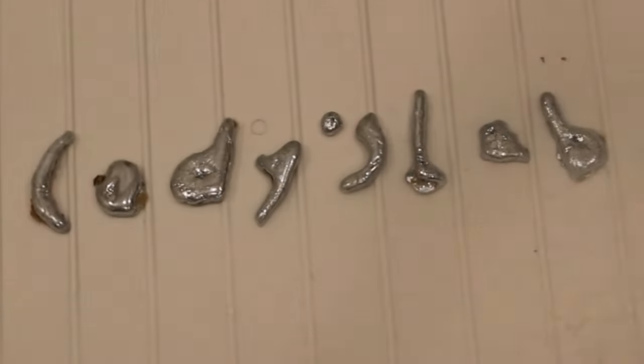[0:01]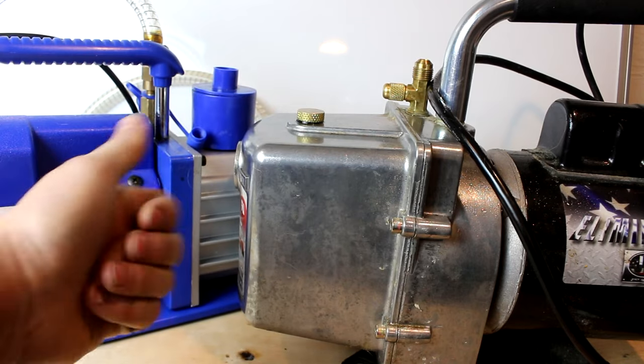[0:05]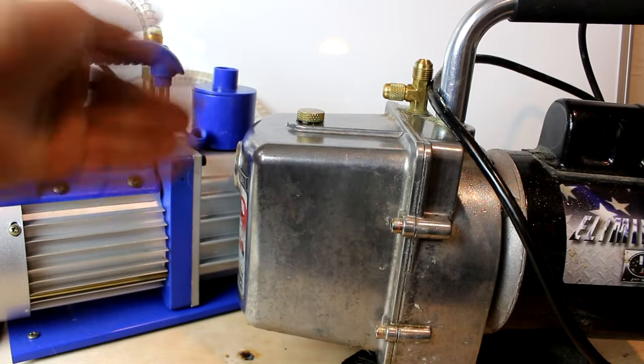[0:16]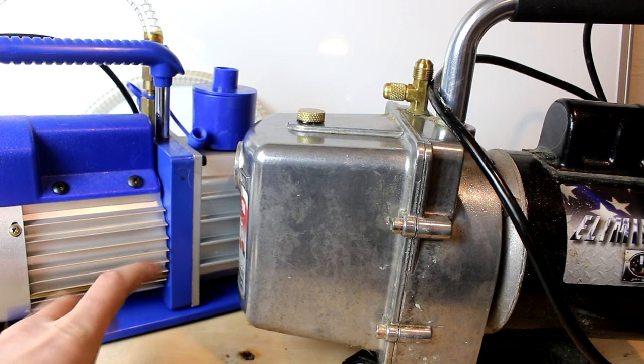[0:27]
So here are the vacuum pumps that I've been using in several of my recent videos. And with these, I'm able to exhaust the atmospheric pressure inside of a chamber down to roughly 1/1000th of what it is normally. So that is 99.9% of the way to a perfect vacuum, which is, for most purposes, totally adequate. Unfortunately, there are some experiments I have planned that require me to bring it down to roughly 1/1000000th of atmospheric pressure, so I need to add a few more nines to that value.
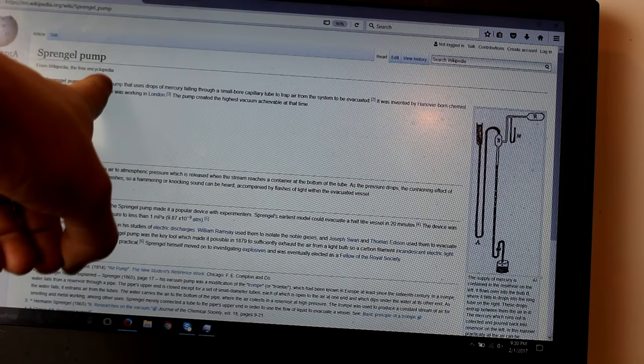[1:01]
In order to achieve those levels of vacuum, I was considering purchasing either a turbomolecular pump or a diffusion pump, and I may still yet. But while I was researching it, I decided to look up what they used back in the old days before those types of pumps even existed. You know, what did Thomas Edison use to evacuate his light bulbs, and what did Crookes use to evacuate his Crookes tubes? The answer to that is the Sprengel pump.
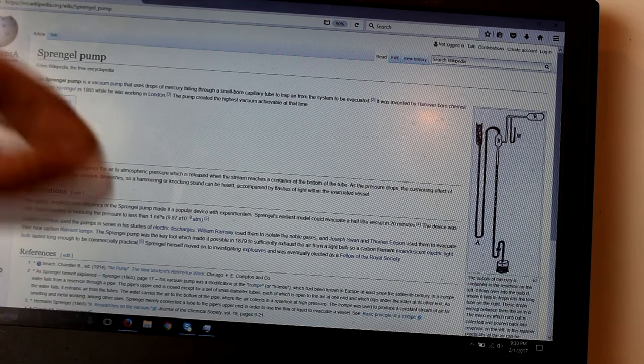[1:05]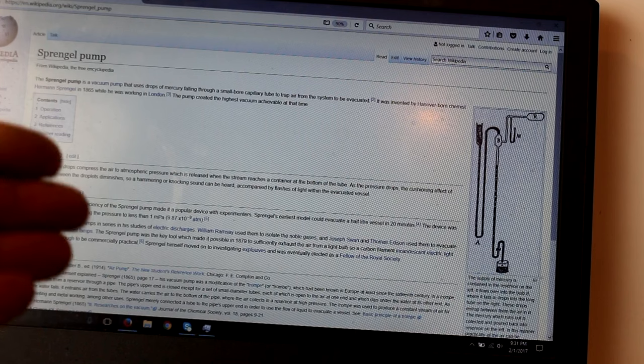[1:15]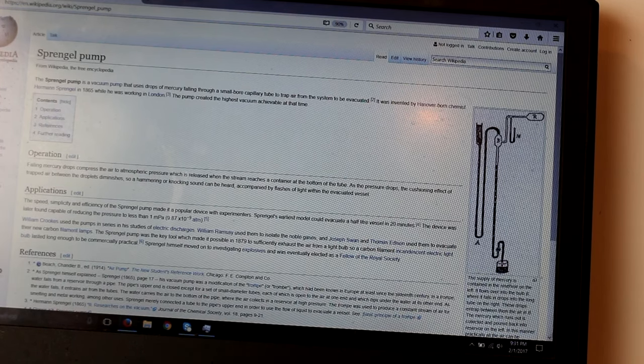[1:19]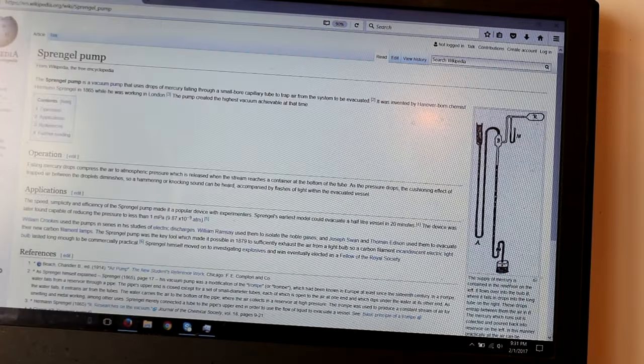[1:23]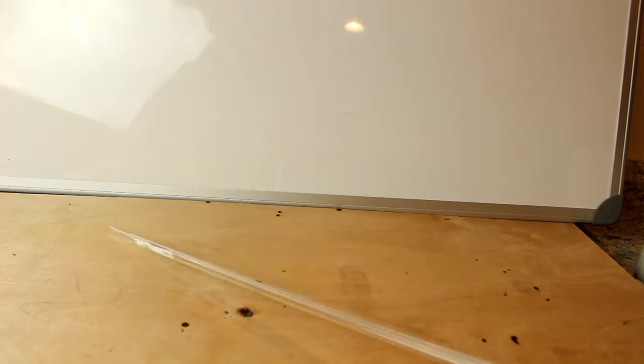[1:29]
I probably said that completely wrong, but the idea is that you use droplets of falling mercury to evacuate a chamber. And theoretically, it can achieve vacuum levels down to the vapor pressure of mercury, which actually is quite low. And that would be more than adequate for projects that I have planned. Also, I've got loads of mercury. In fact, the more I look into this pump, the more I want to build it. And so you know what? I got me some glass. Let's see if I can actually build it.
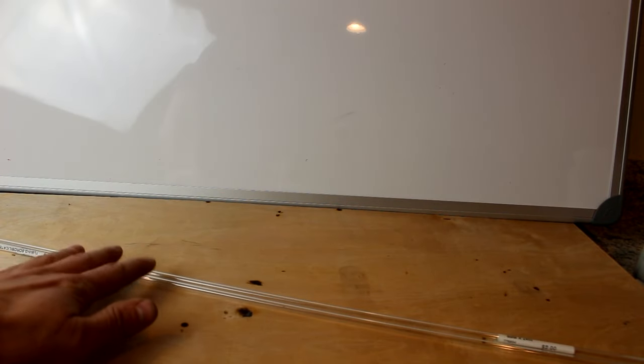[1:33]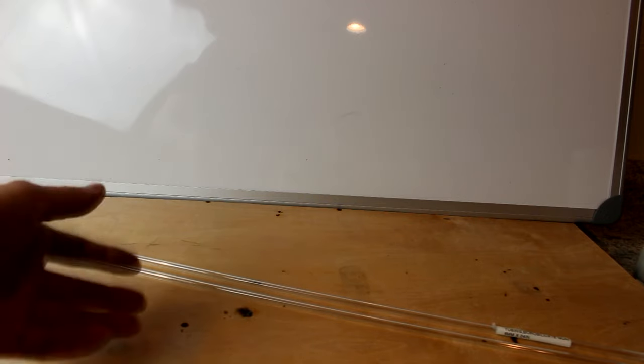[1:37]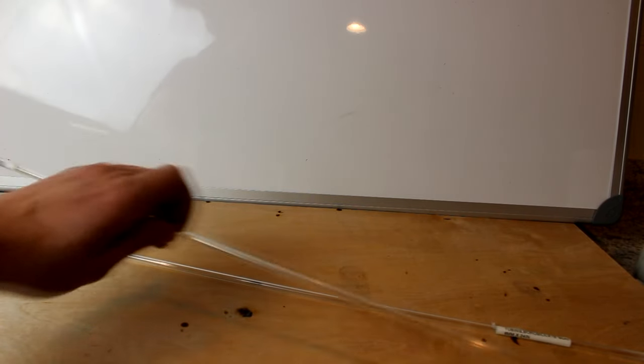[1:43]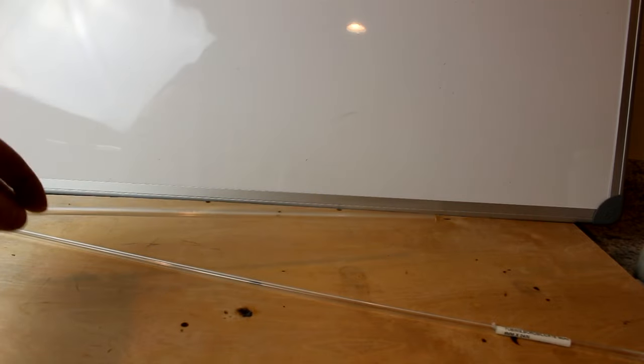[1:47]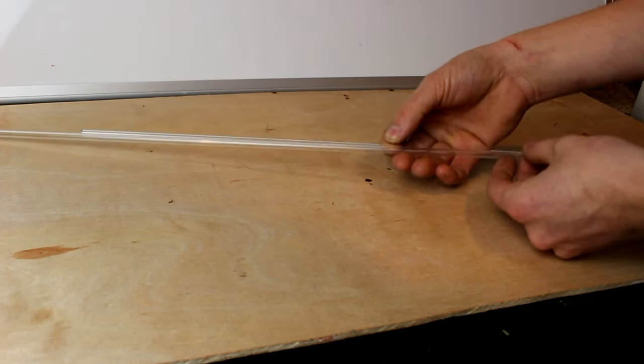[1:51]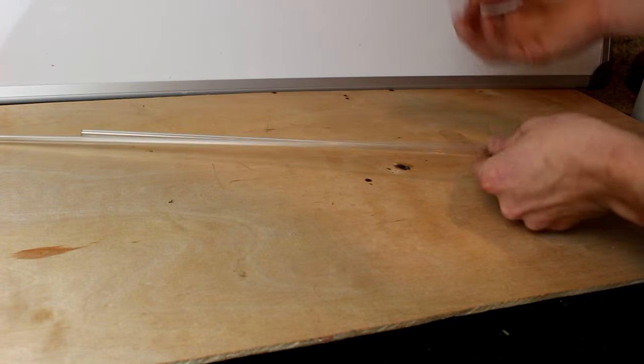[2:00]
Now, I don't think one of these pumps has actually been used since color photography came about, and so I don't really have any good photographs of it, so I'm going to have to make guesses on most of the dimensions. But I think I can figure it out, and it's more fun this way. Now, the first thing I got to do with this is cut some down and make a T. You know, I've got to have somewhere for the mercury to go in, somewhere for it to come out, and somewhere for me to hook up to a vacuum chamber.
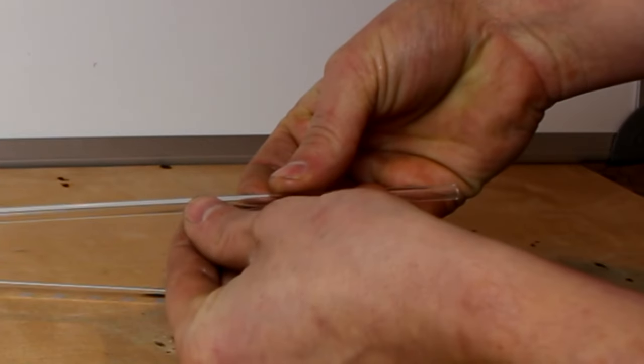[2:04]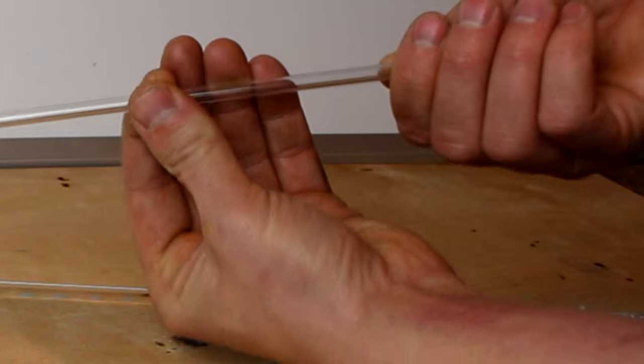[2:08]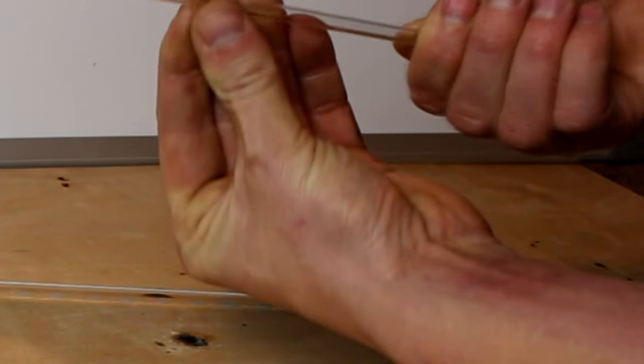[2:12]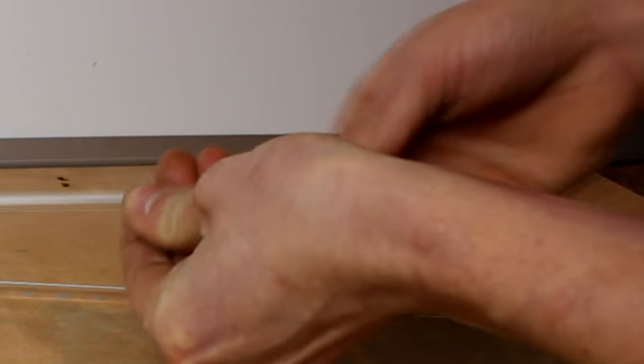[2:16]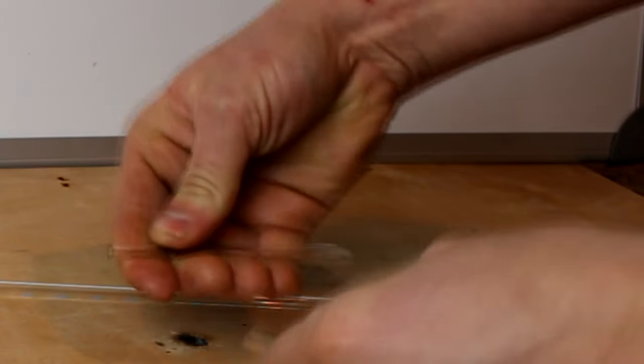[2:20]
So I got a little diamond here I'm going to use to cut the tubing. Let's say about yay long for the first T, maybe a little longer. Let's just run this diamond around here. Ow. It's actually sharp. Let's run the diamond around to score it. Now I should just be able to snap that off. Excellent. So now for the fun part.
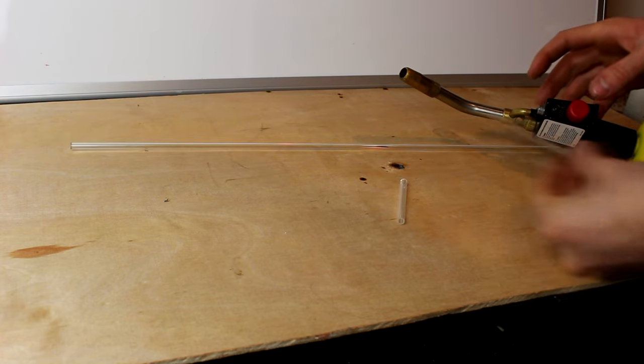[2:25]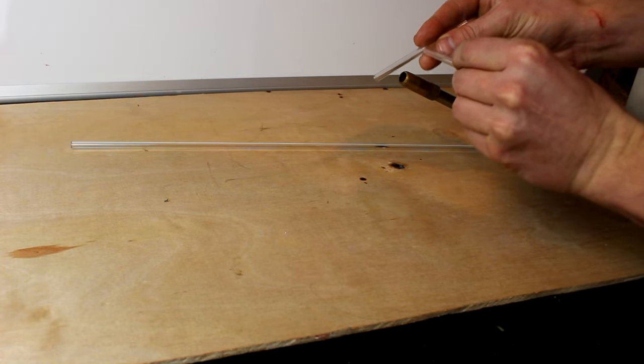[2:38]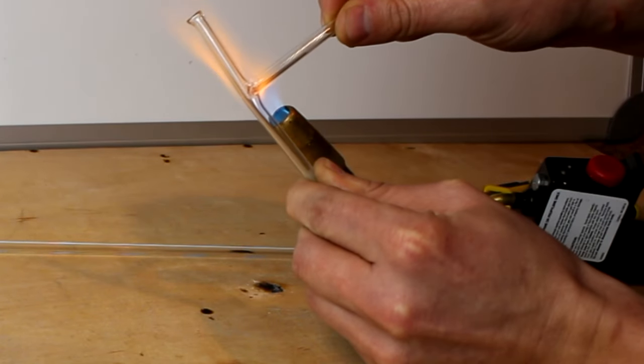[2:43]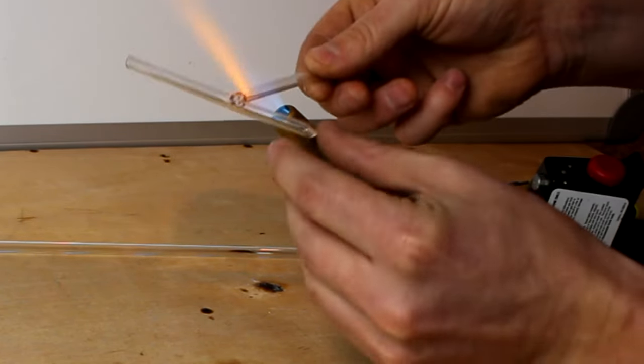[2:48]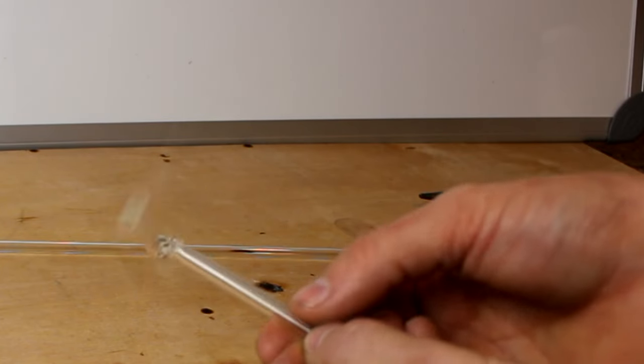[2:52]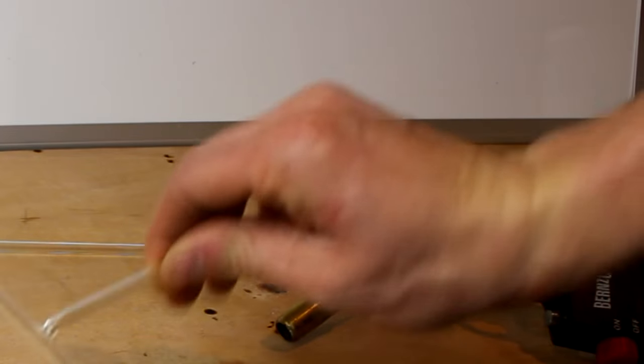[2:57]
I don't have any specialized glass blowing equipment. In fact, all I've got is a blowtorch. I probably should buy something at some point, but I think it'll work still. So let's seal one end, let's blow a bubble, and then attach that to there. Sounds simple enough. Okay, so there's the T. It could be better, but as long as it seals, it should work.
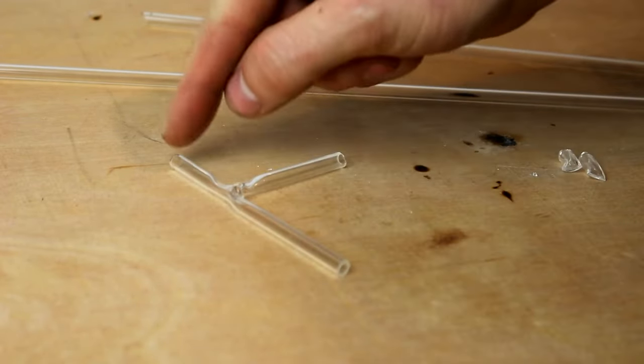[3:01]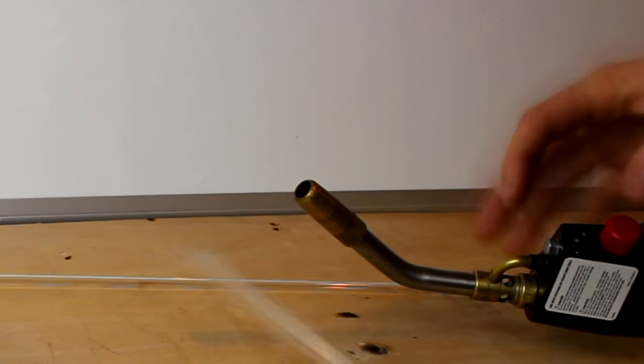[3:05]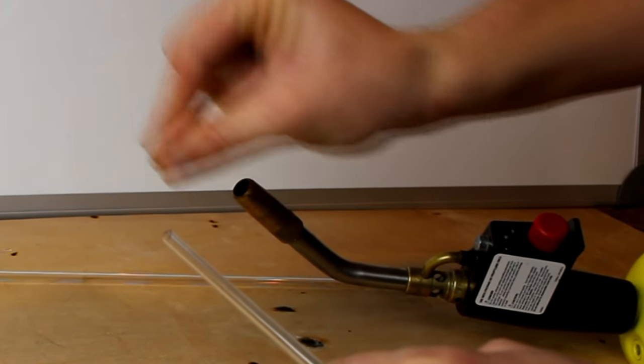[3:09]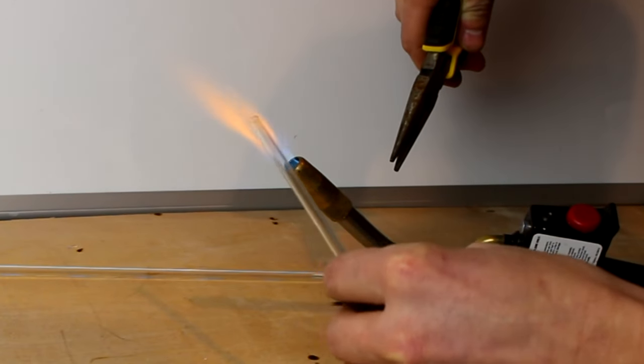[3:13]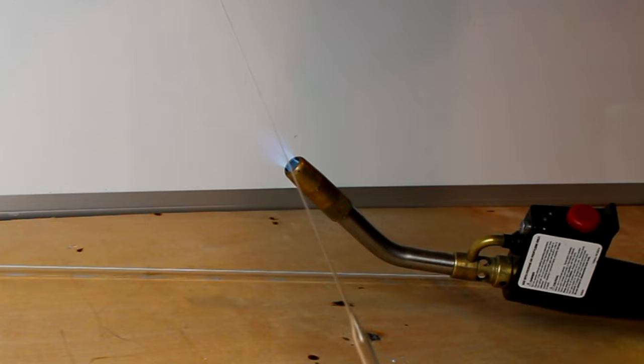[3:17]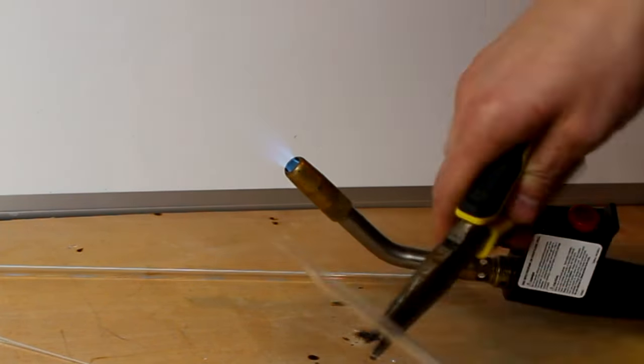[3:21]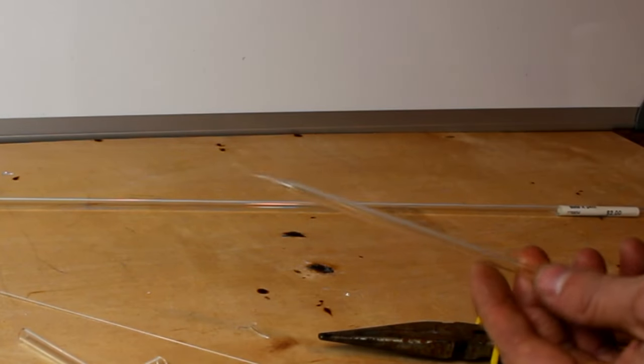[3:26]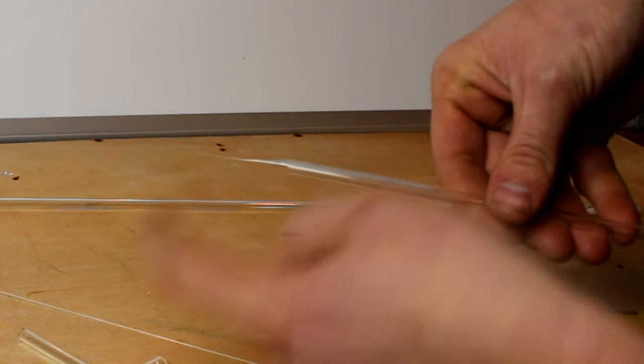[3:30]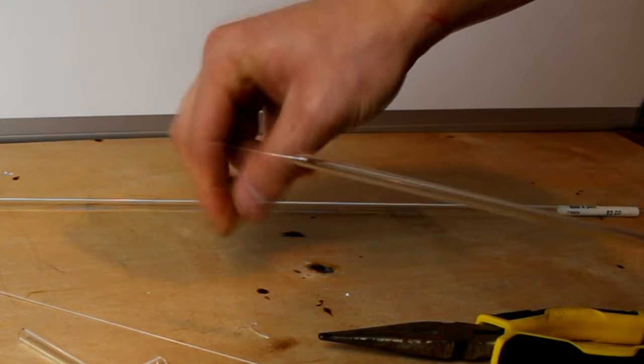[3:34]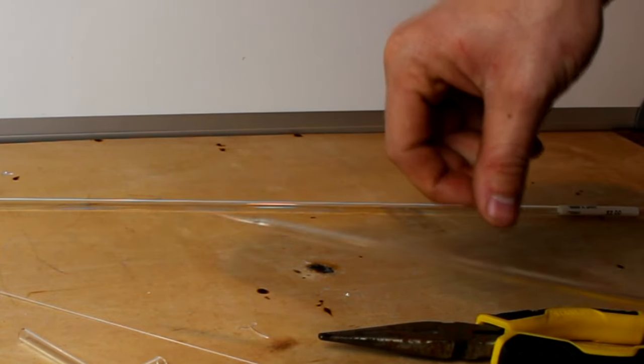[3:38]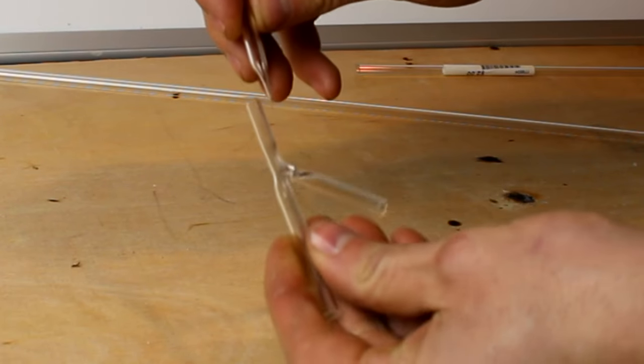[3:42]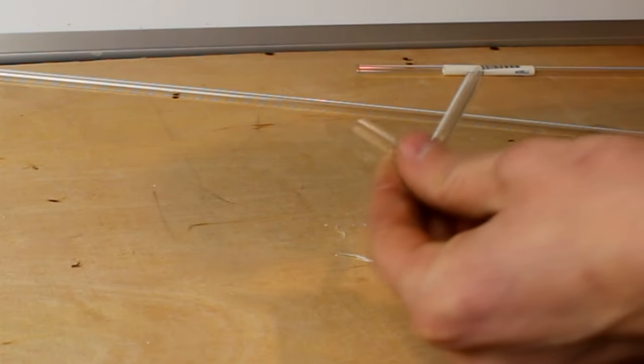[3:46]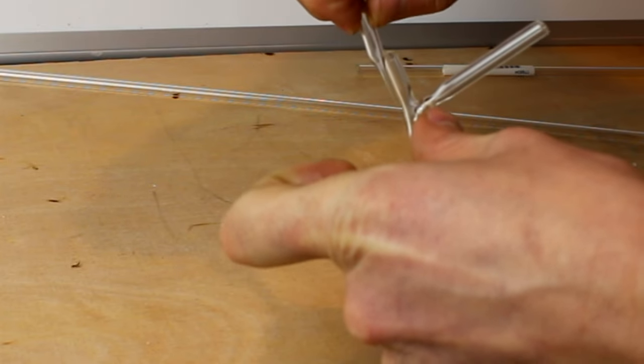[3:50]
Now let's make the mercury dropper to go inside of this. So to do that, I'm going to stretch the tube really thin. That way the mercury can only come through a very tiny hole. Okay, so the glass is now stretched to the point where you can probably not even see it on the camera. I'm gonna break it right about there. Now there should be a very tiny opening for the mercury to come through. That should give me some very small droplets. Now I just gotta stick this into there. I think the best way to do that is to flare this out and then heat it up again and seal those together.
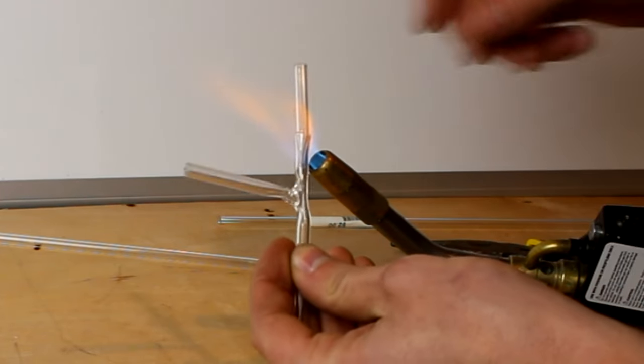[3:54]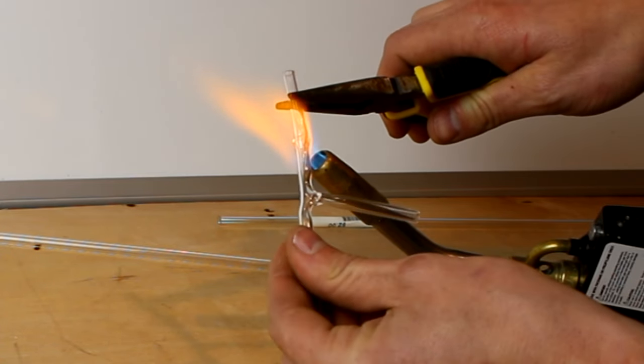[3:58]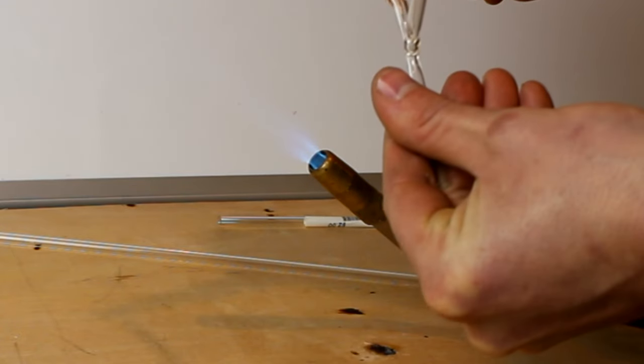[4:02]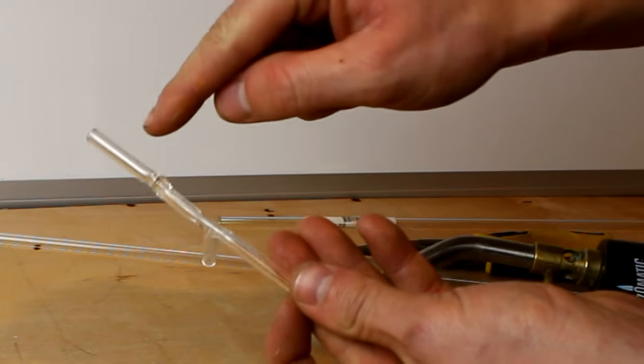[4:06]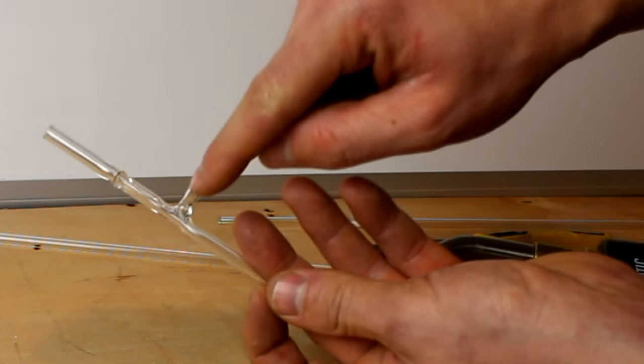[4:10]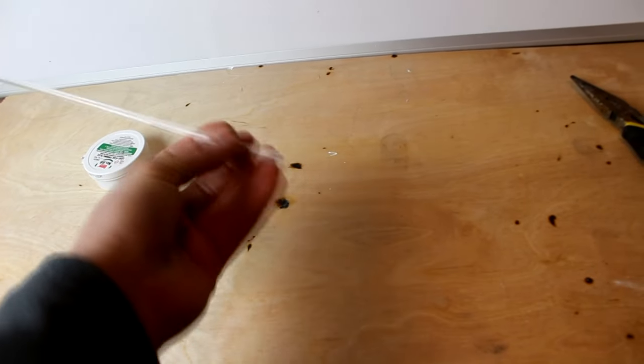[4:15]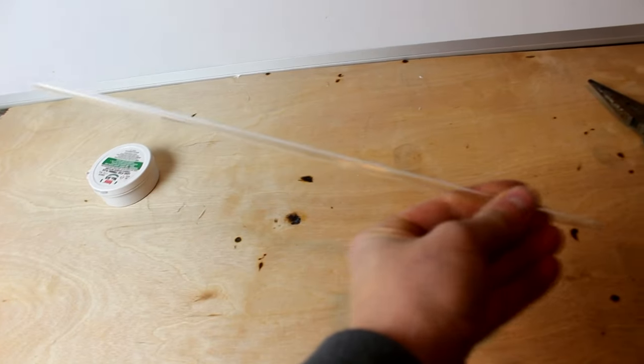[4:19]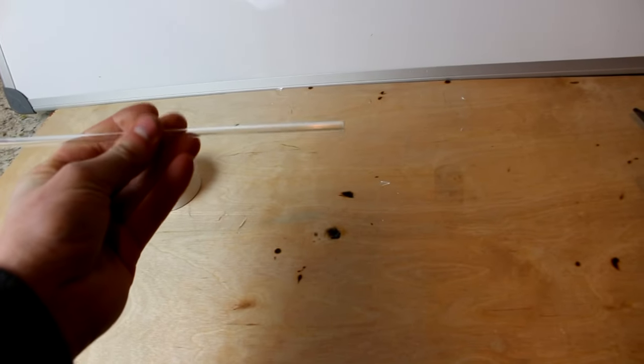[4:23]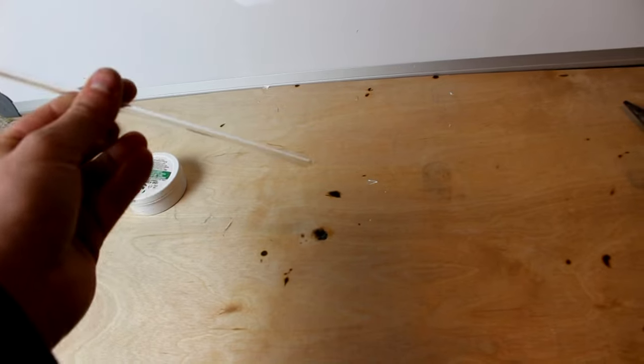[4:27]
There we go. The very thin tube to drop the mercury is now actually down below the junction here. So I don't know exactly how large in diameter or how long the capillary tube needs to be, but this is definitely far too short and far too wide. So I'm going to stretch this out to about 4 or 5 feet, and we'll go with that.
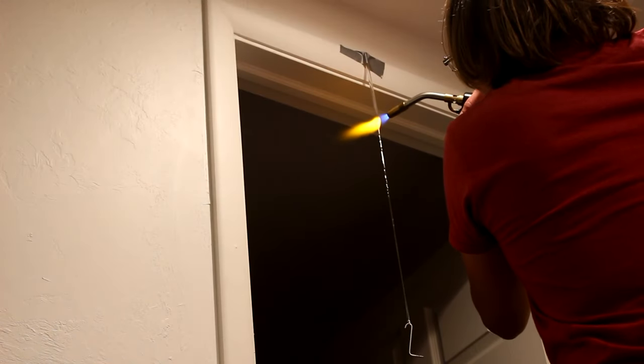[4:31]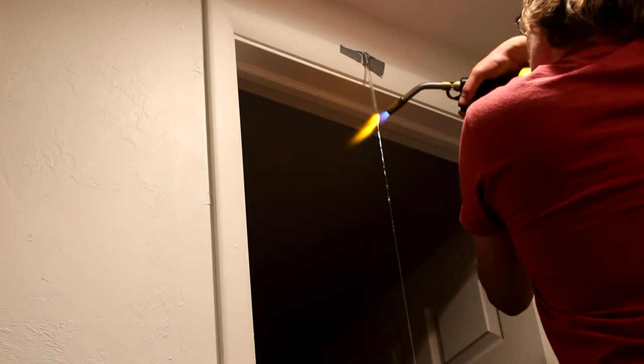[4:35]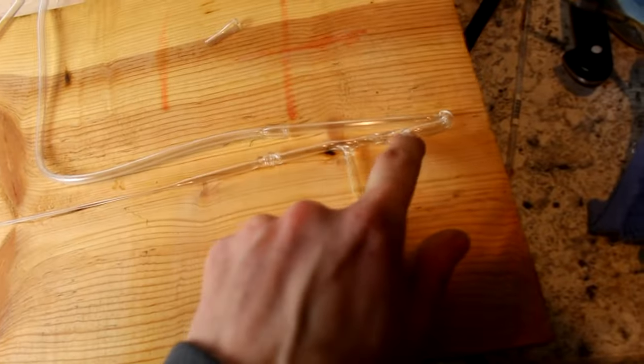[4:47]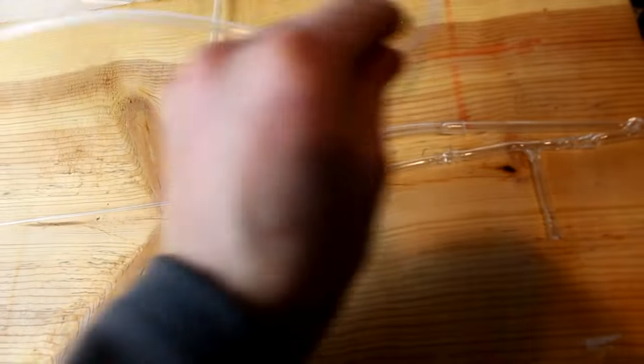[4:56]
So here's the pump nearly complete. You see I've got my capillary tube on here. I think it's 120 centimeters long that I managed to make. And you can see I've got the glass turned around. And for now I've got a plastic tube stuck on here because I'm not really sure where I should put the mercury reservoir, so I want to be able to move it around.
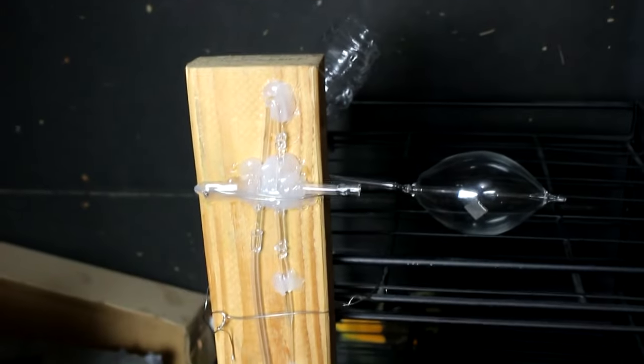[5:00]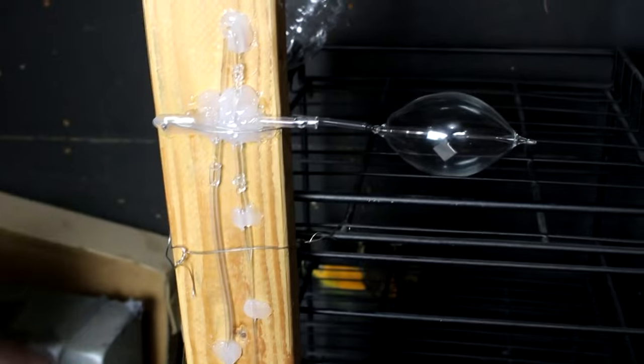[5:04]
So here's the completed pump. I've glued it to a 2x4 to keep it stable so it don't break accidentally. You can see there's a plastic tote down here to catch any mercury droplets, although I probably wouldn't mind the excuse to clean the garage.
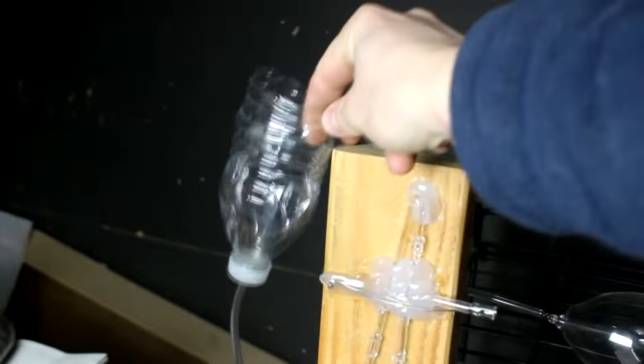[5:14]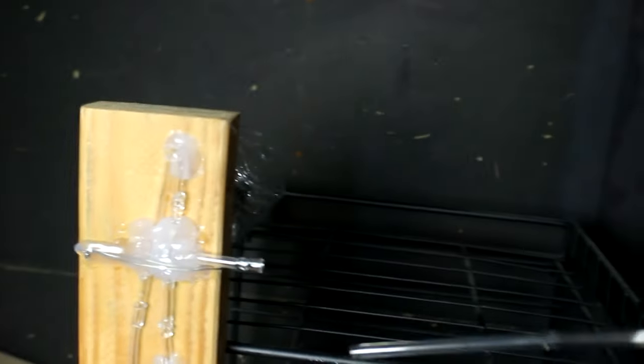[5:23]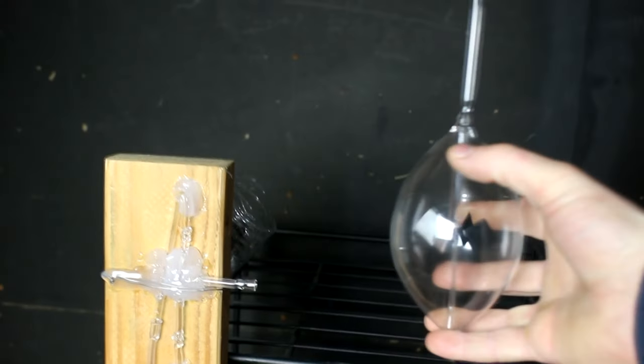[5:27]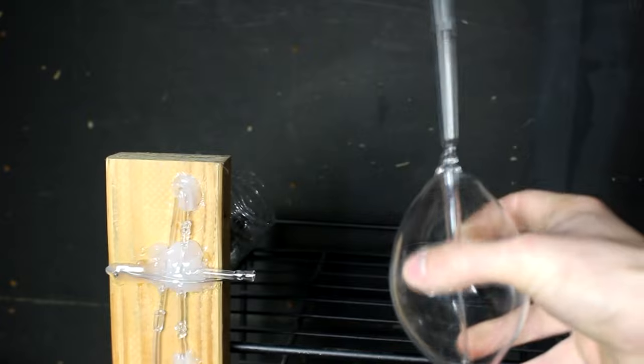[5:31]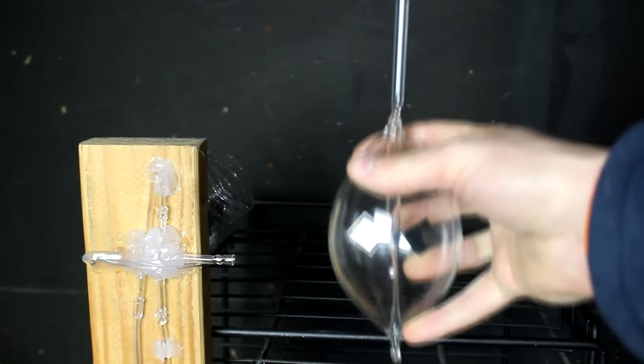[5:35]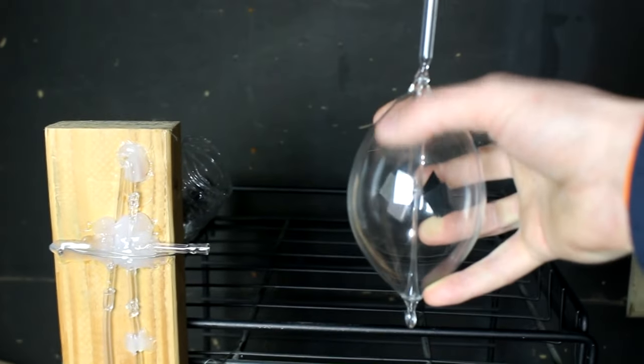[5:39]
So I've got a little reservoir here which I'll be using to fill with mercury, and I can change its height however it needs to be. And for the chamber that I'll be evacuating, I thought, why don't I try this Crookes radiometer here. You see, I broke the top off of it, thereby destroying it, because it does need some vacuum in there to operate. But the idea here is that I'll regenerate that vacuum with this pump and continue down until the point where it stops working, because it does need a little tiny bit of gas in order to work.
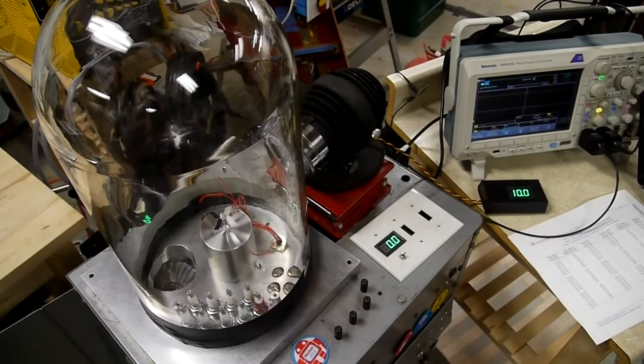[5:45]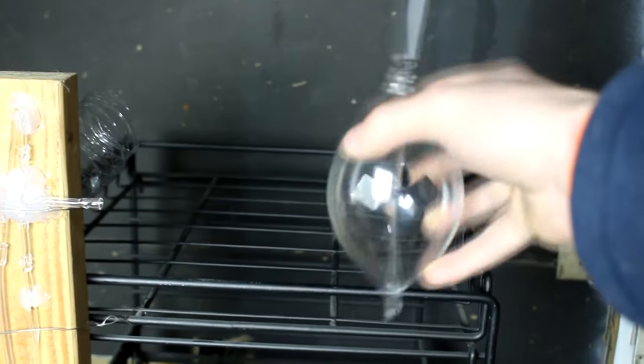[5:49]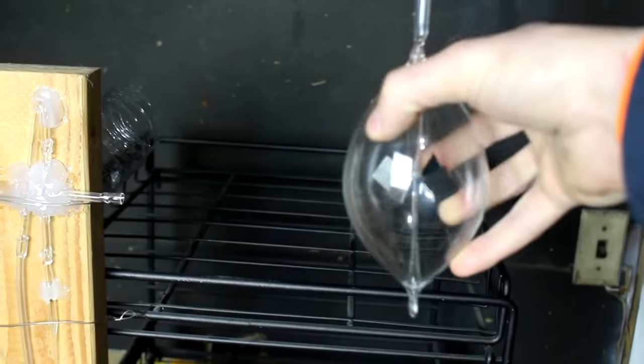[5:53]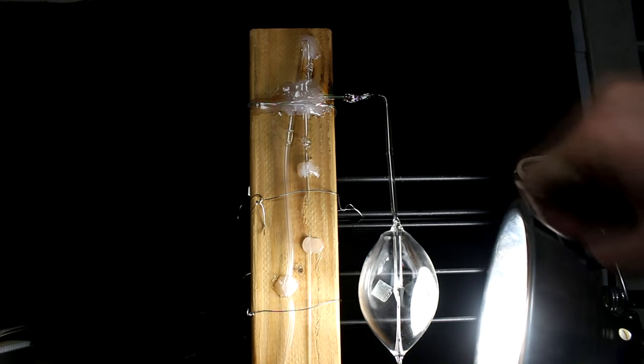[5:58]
In fact, Applied Science did a really nice video on this, which I'll be linking down in the description. Based off of his data, I should be able to estimate what the level of vacuum is, judging by how fast the radiometer turns. Okay, so there's the radiometer attached. Now, this amount of light would have normally made it spin, but as you can see, it is not spinning currently. That's because the air pressure is way too high for it to operate.
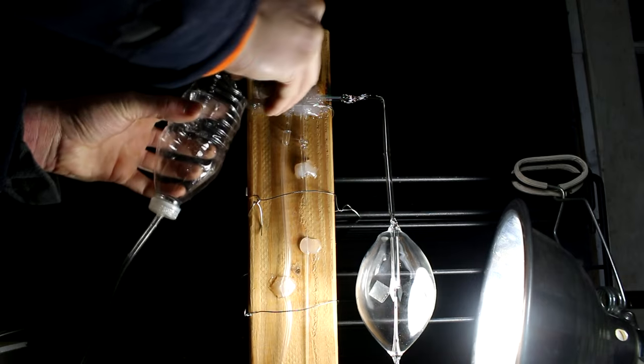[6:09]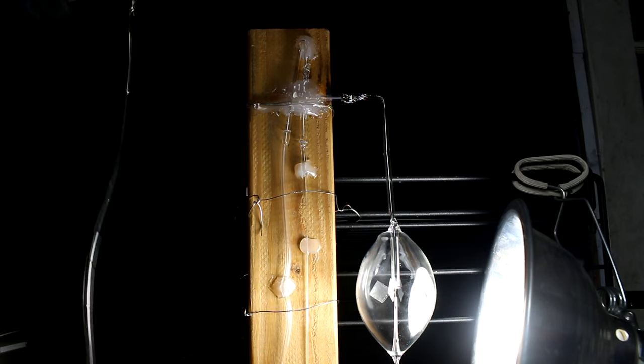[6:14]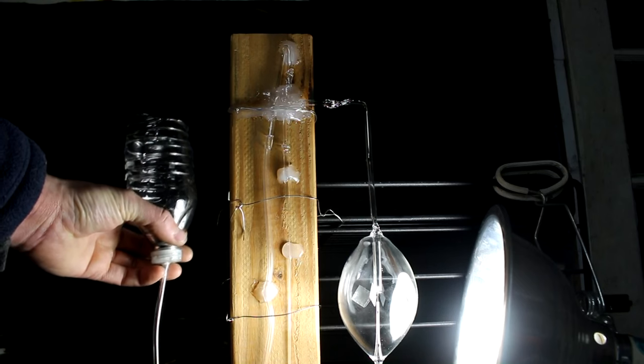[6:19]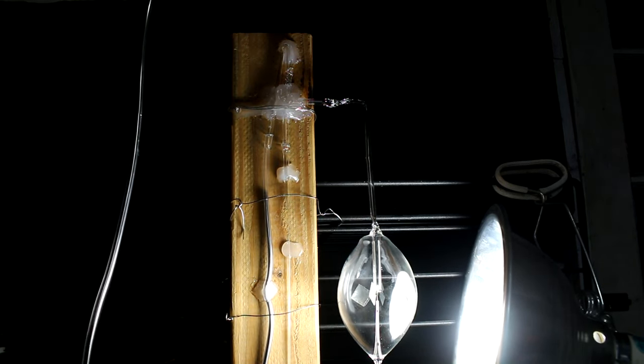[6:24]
Okay, so the first pound of mercury is going in. That's one problem. It's gonna be clear full of air. I got the air bubbles out. Now when I lift this up, the mercury should head right on into the system. And assuming we don't have any major leaks, it should start pulling a vacuum. Okay, there's the first drop. So it went down without trouble, carrying a little bit of air with it.
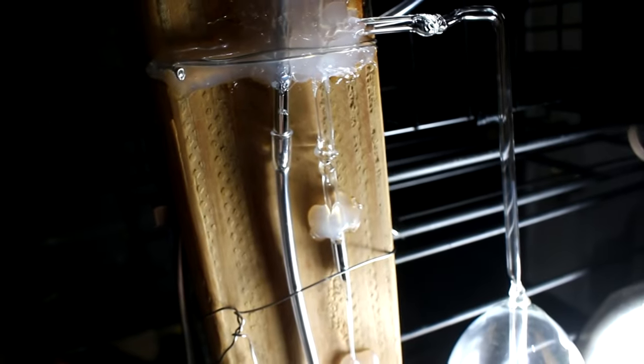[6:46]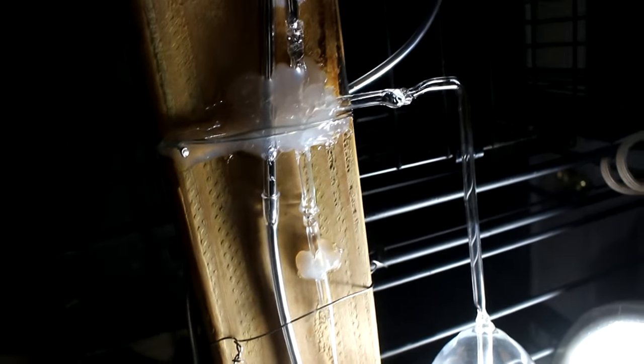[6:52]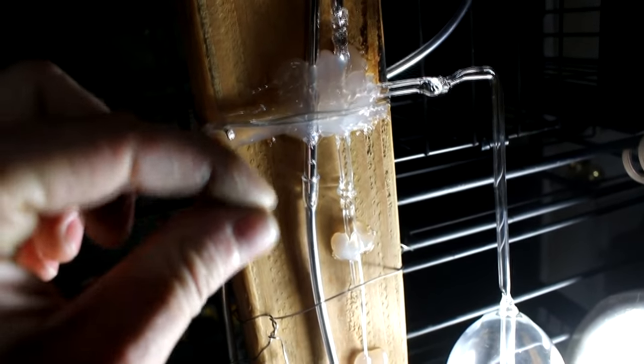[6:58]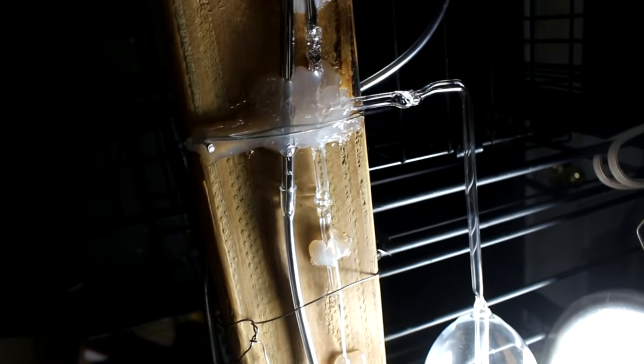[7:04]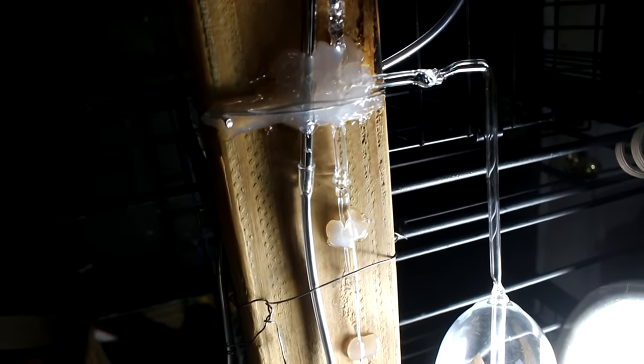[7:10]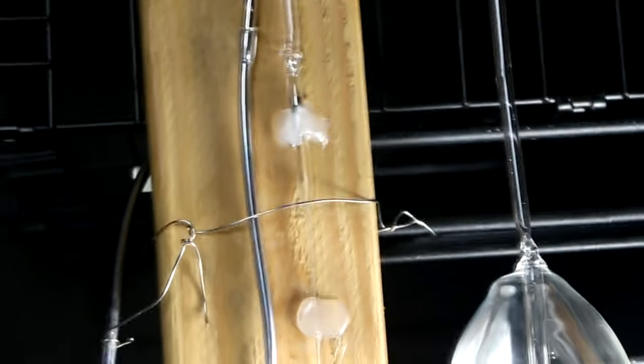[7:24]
Excellent. I don't know if this is a big problem, but the mercury appears to pile up in this junction right there and then go down in huge slugs, whereas I would rather it go down like each individual drop go down through the tube. I don't know if that problem will solve itself because I'm operating at near atmospheric pressure right now, but it's definitely something to possibly fix if I ever build one of these again. So it's horrendously slow, but it is working. It is capturing a little bit of gas and shoving it out every few minutes. And if it keeps that up, then by the end of next week, I should have a pretty good vacuum in here, right?
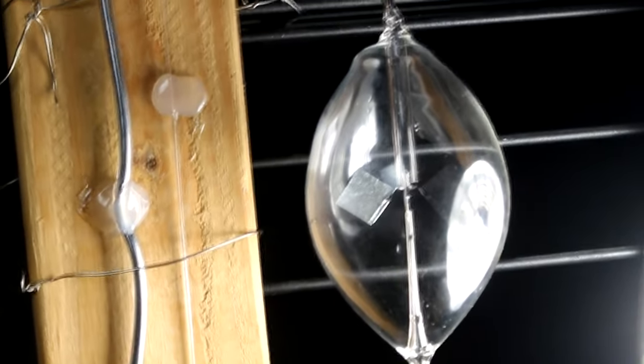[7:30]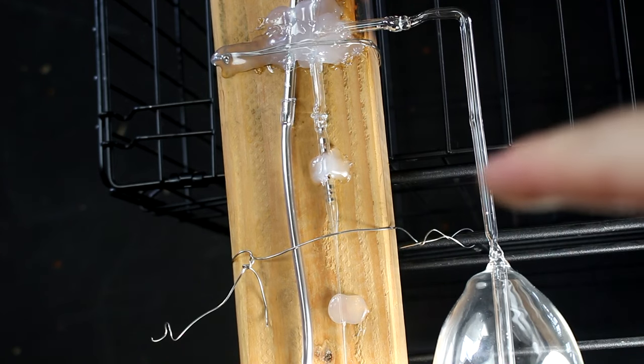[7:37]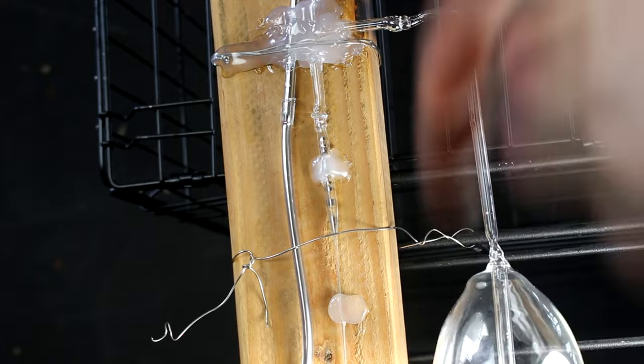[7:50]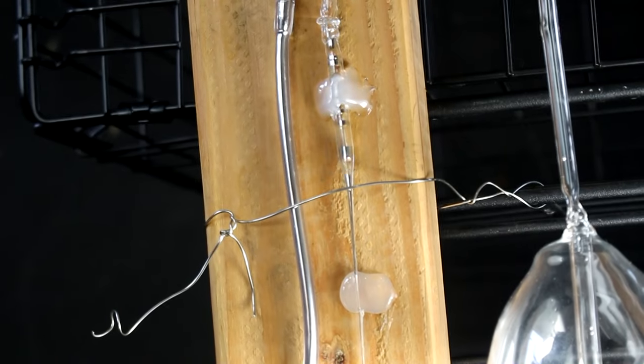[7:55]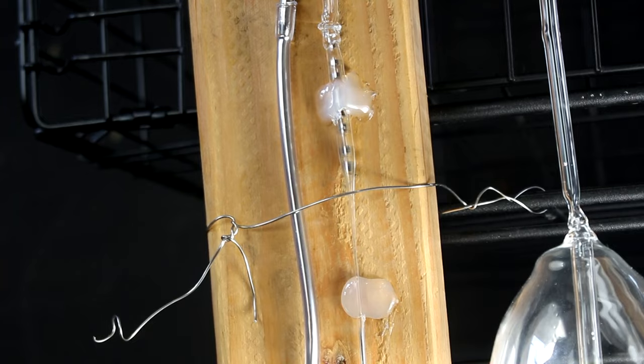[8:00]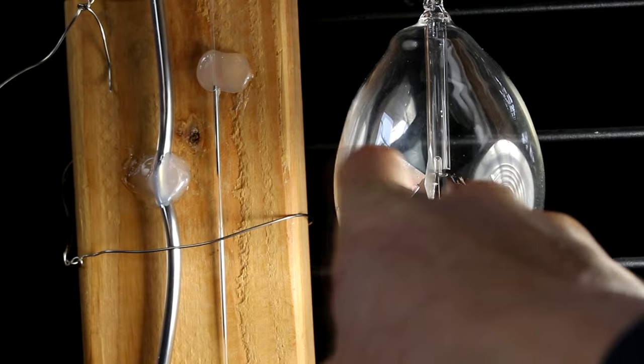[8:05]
So it's been 2 days since my last cut, and I've had this thing running probably at least 24 hours. And I've noticed that today it has sped up significantly. And I think the reason for this is because I'm approaching a decent vacuum in here, and the weight of the mercury is able to actually compress the gas, and it's able to go down. And as you'll notice, the droplets are moving much more regularly now. So it's actually sped up its pumping ability. The radiometer still is yet to start spinning.
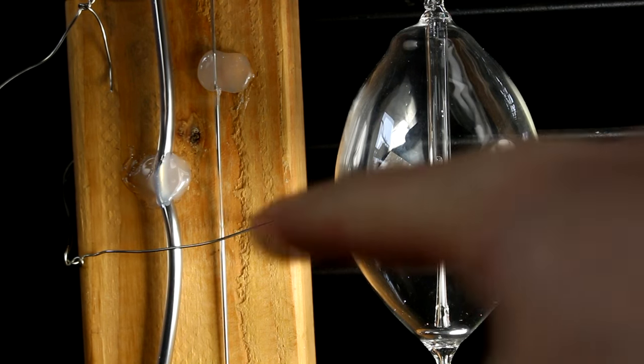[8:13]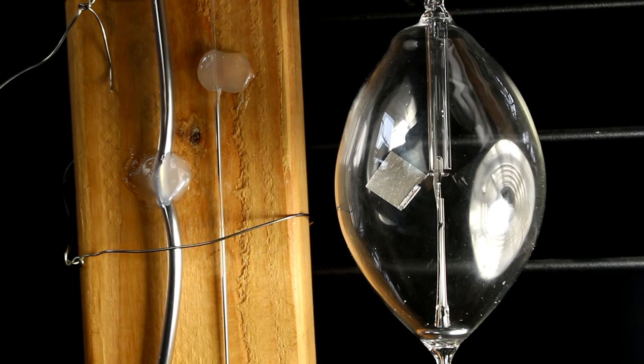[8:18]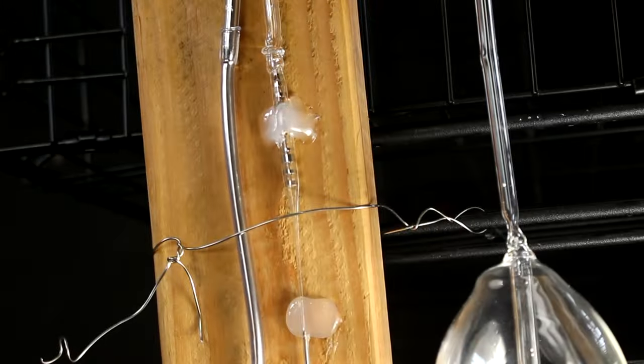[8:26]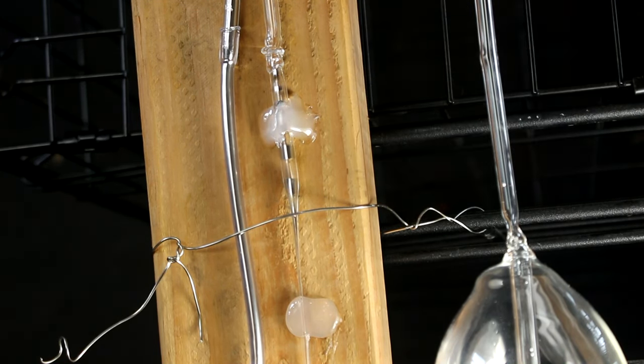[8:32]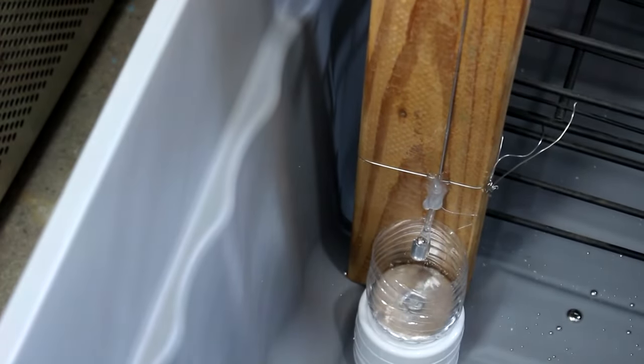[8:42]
If I nudge it a little bit, it's still not spinning. And you notice that there's a little bit of mercury in here, because occasionally this thing would back up and it actually poured mercury over into this other thing, but it seems to have stopped doing that, and it only did it a couple of times. Yeah, it's actually working. The droplets are capturing little bits of air, and then the weight of the mercury pushes that down, and it goes down this tube. As you can see, it gets compressed along the way, all the way down here, and I've got it coming out of a little spout into a catchment basin.
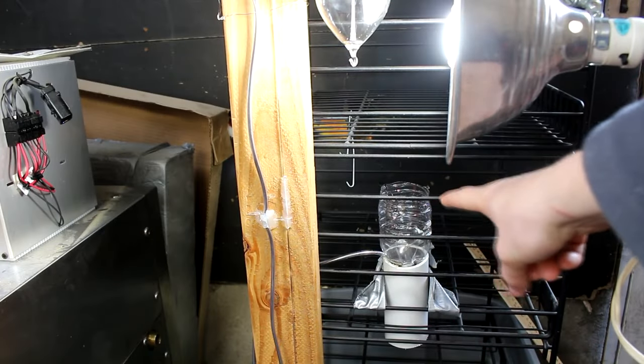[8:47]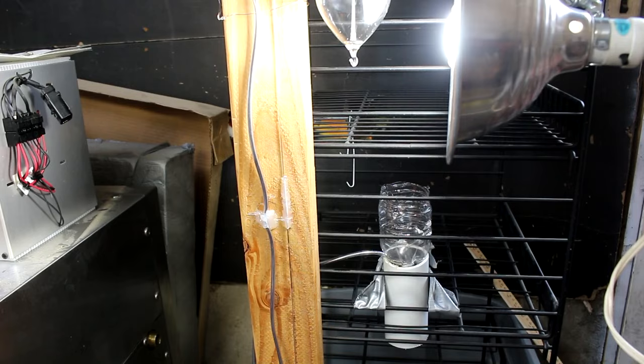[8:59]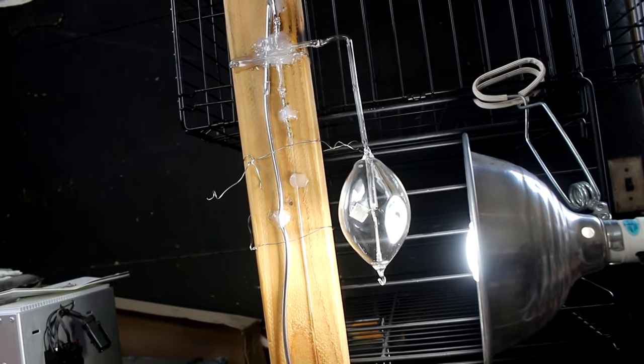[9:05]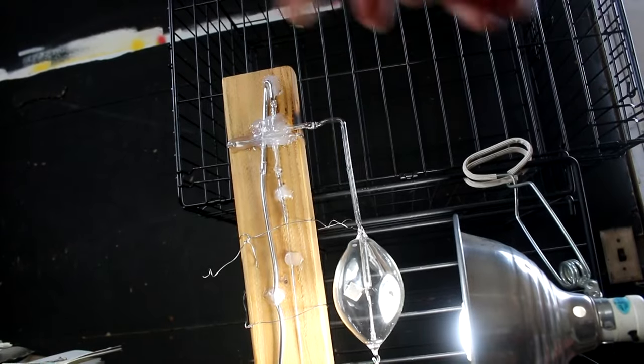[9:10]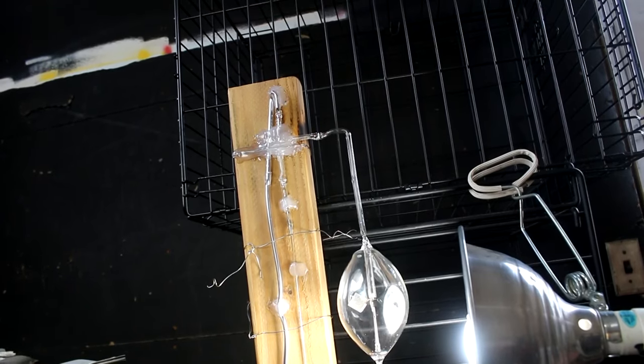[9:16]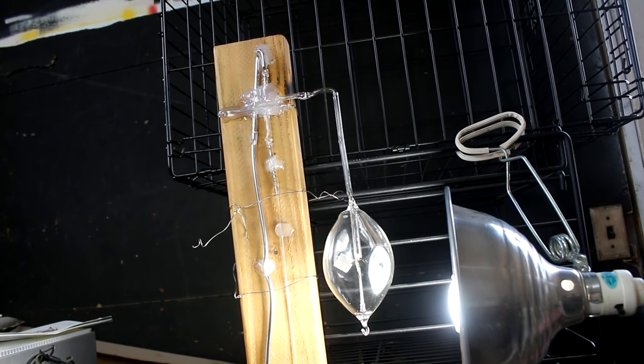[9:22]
Another thing you'll notice is that I've had to move the mercury way down here. Before I had it way up on top, but now I've moved it down here. That's because the vacuum is actually pulling the mercury up the tube and into the device. See, because there's a vacuum in here, it's actually pulling the mercury along. And if I have the reservoir up on top of this cage like I had it, it would just have a stream of mercury going in and it wouldn't actually capture any droplets of air. Yeah, this thing's working. I'm gonna let it run for a little while longer, and hopefully we can get to the point where it's actually able to start the radiometer spinning.
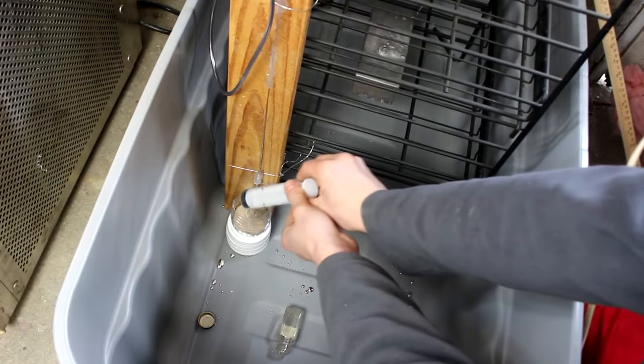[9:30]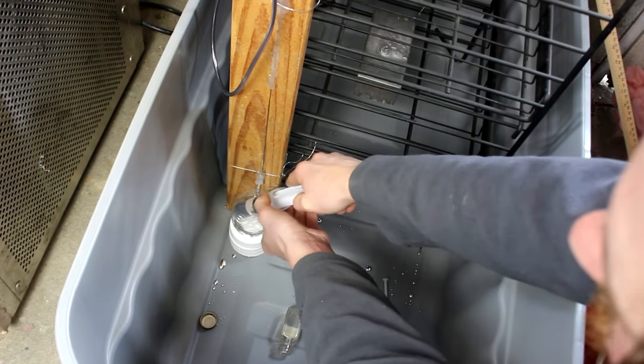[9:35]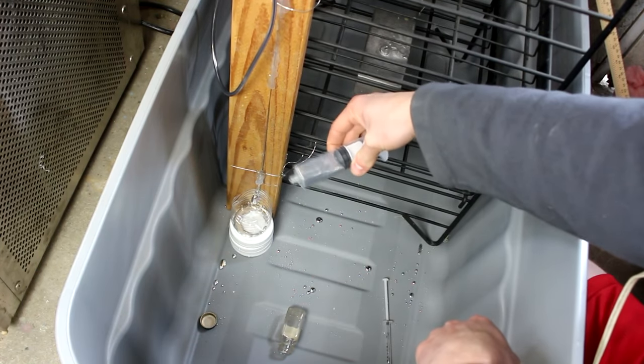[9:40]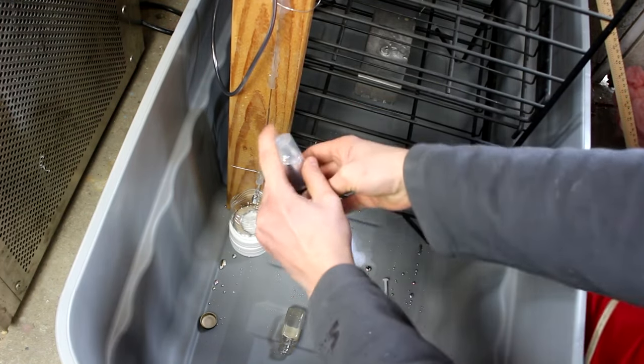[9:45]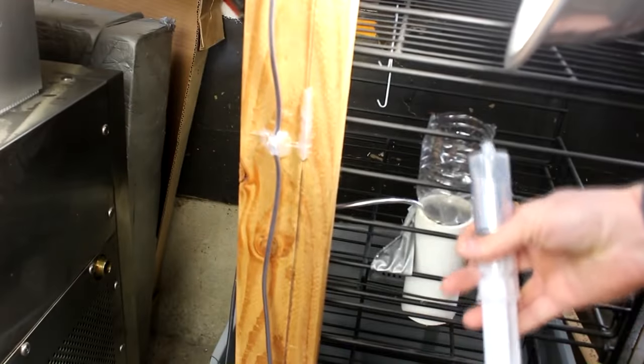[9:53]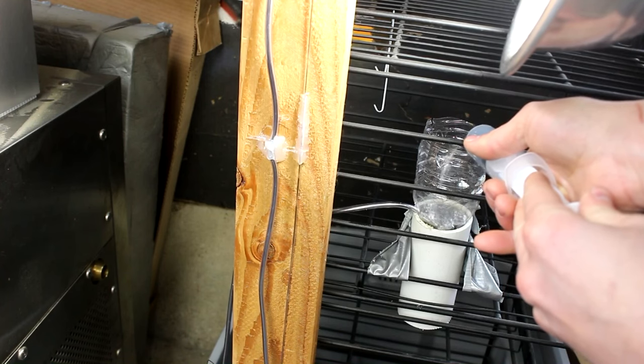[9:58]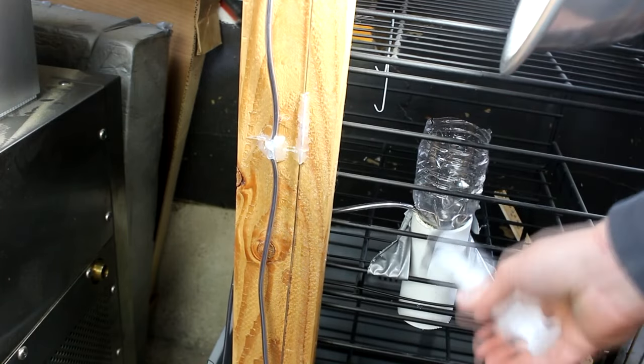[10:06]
So about every half hour or so, I come in here and I suck up the mercury out of this container like this. My syringe works really well for this, although I do spill some mercury occasionally because the weight of it is able to actually pull this plunger down and it comes out. So I have to hold it like this when I'm transporting it. But now I lift it up to this point up here and I squirt it into this chamber. The mechanical work that I'm doing to lift the mercury up that distance is ultimately what's powering this pump.
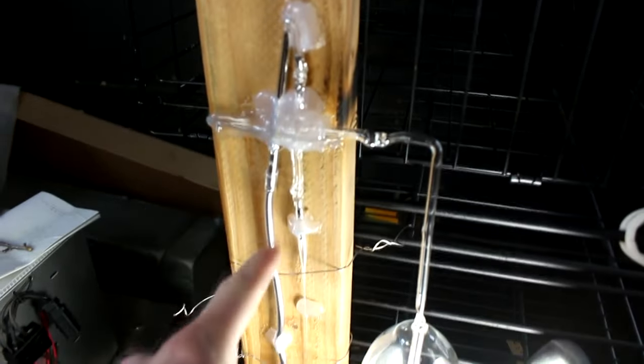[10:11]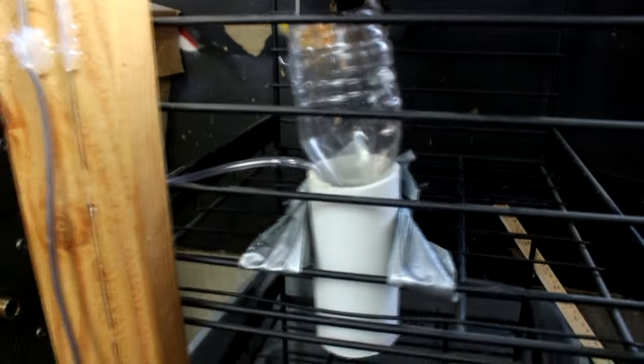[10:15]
This is what happens if I let it run out of mercury. As you can see, it's no longer running. My mercury is out of the chamber.
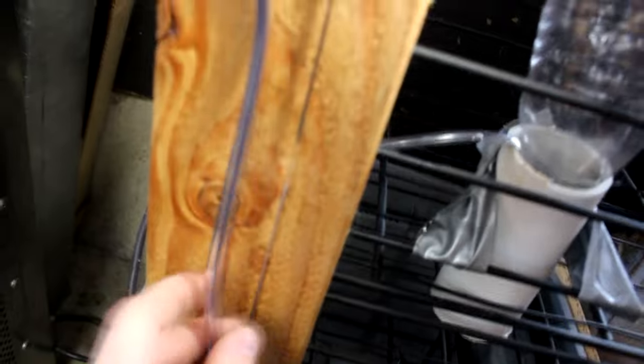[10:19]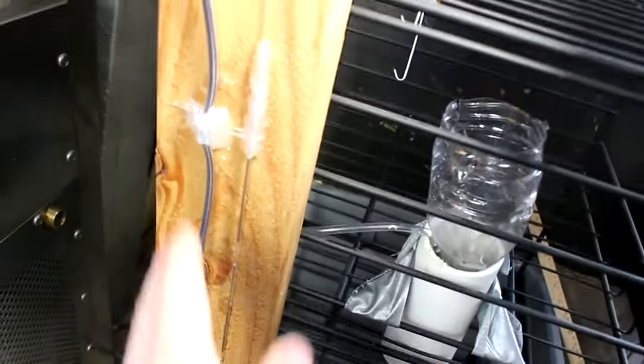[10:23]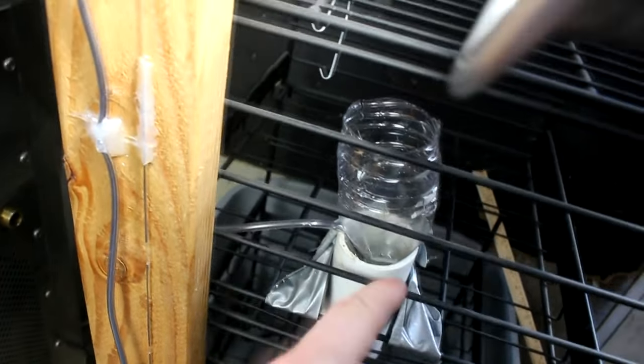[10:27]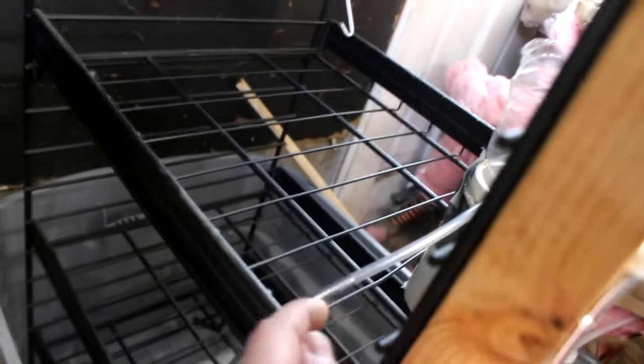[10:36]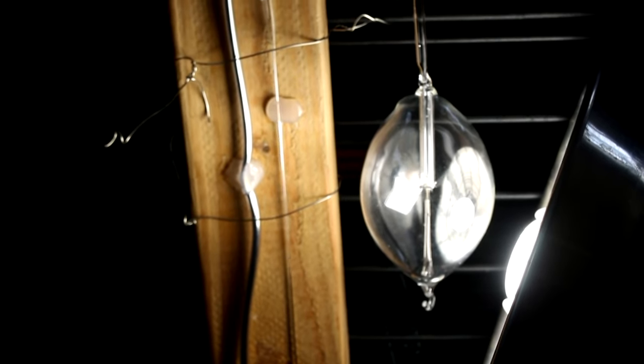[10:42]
But as you can tell, there's still mercury in this tube here. The weight of the mercury is actually holding the vacuum. So now all I gotta do is put more mercury in here, maybe finagle it around a little bit to get it to start flowing, and it'll start right back up. You can see, yeah, mercury is stopped right at this level. It's actually turning. I've achieved a good enough vacuum to get that thing to work.
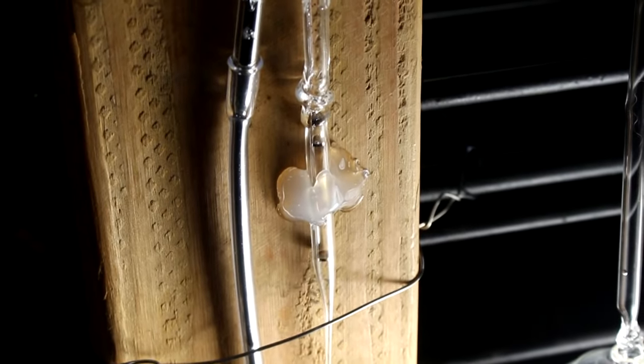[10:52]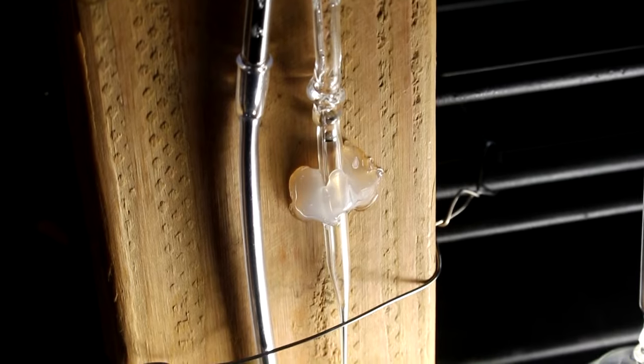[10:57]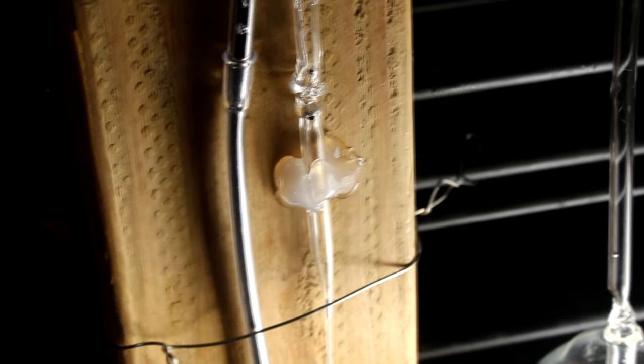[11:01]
And I might say the mercury up here is acting quite a bit different. Instead of sticking around inside the tube for a long time, it sort of just falls straight through. I guess that's because there's no cushioning effect of air beneath it, so the mercury is just basically free-falling through vacuum. Also, I've just noticed you can hear it making noise.
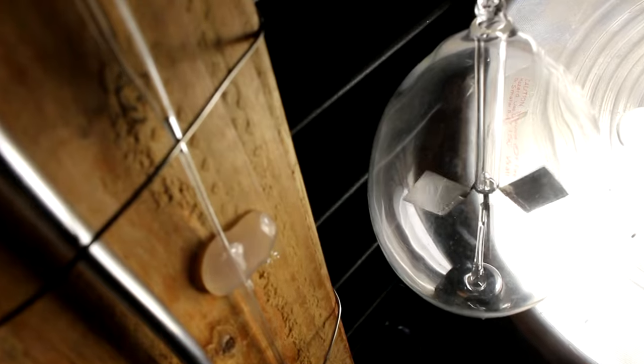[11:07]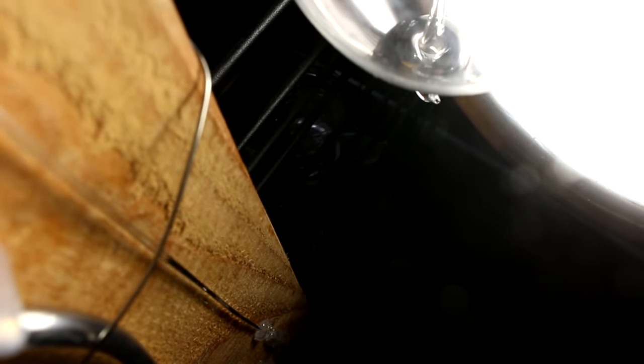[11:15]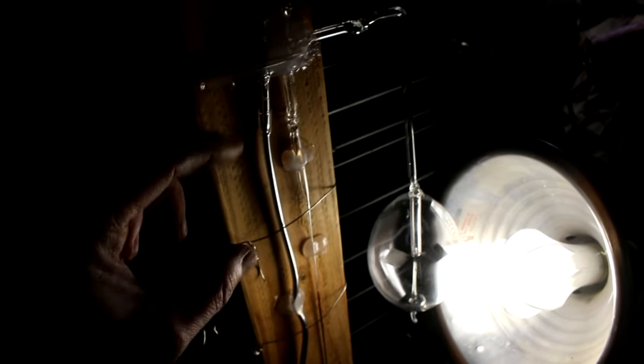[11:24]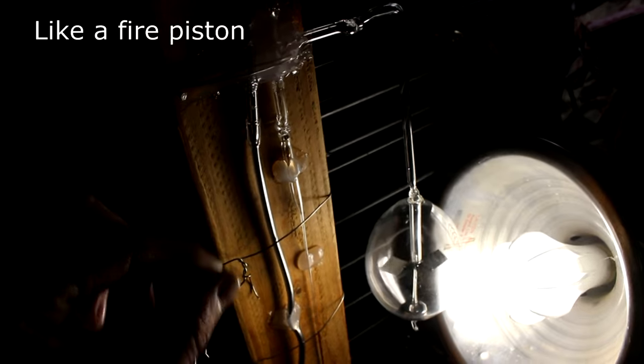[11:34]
Let me get the camera real close to this. Some mercury slamming around in there. Wasn't making that noise before. But again, it's probably because there's no cushioning effect from the air, so the mercury is able to just slam together. Maybe the little bit of air that's there is being compressed, and it's causing it to basically explode on compaction. I hope it don't break the glass.
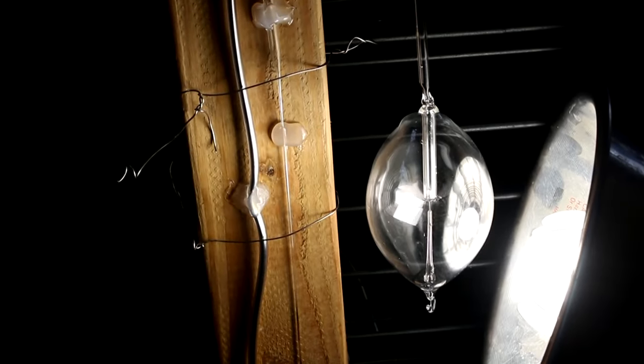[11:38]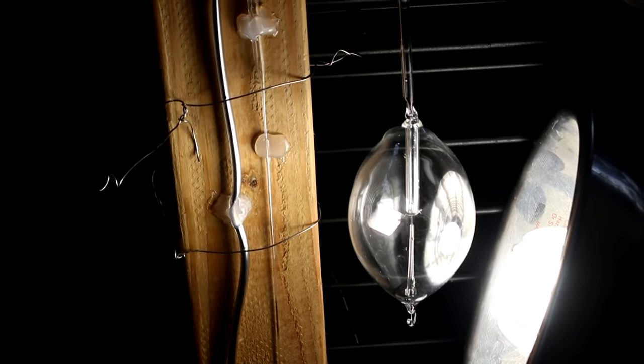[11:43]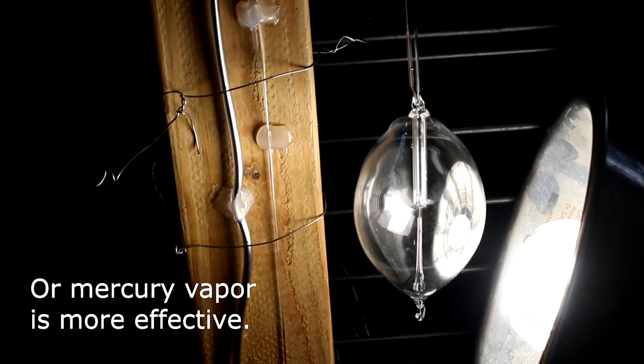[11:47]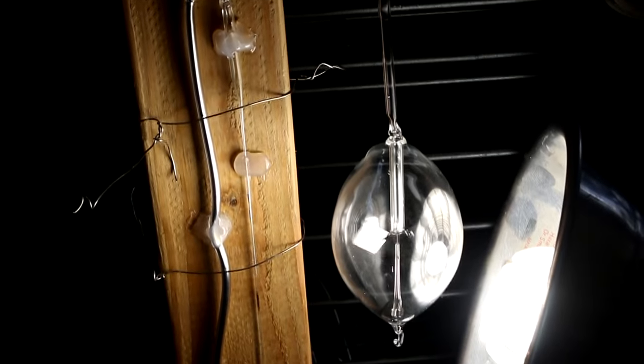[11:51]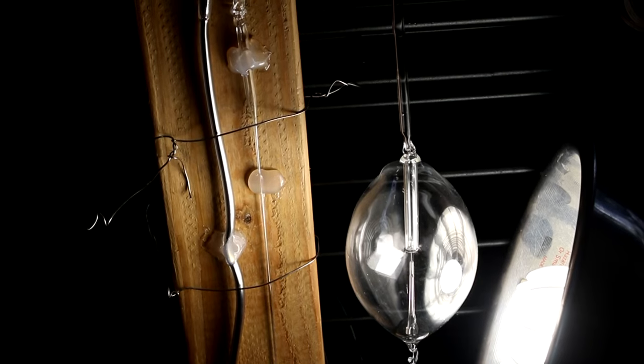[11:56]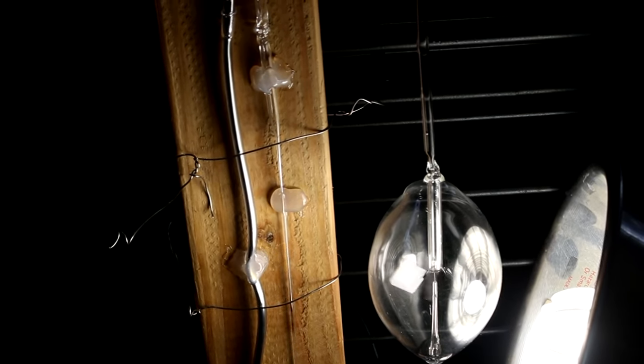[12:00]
So I'd say that radiometer is now spinning faster than it was back when it was brand new out of the box. That means the vacuum level must be more ideal for it. Yeah, it's still pumping down. It's about 4 o'clock, so that means this thing's been running continuously for around 30 hours. Let's let it go clear till tonight.
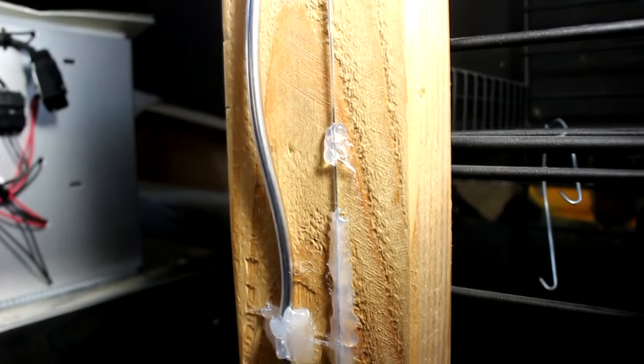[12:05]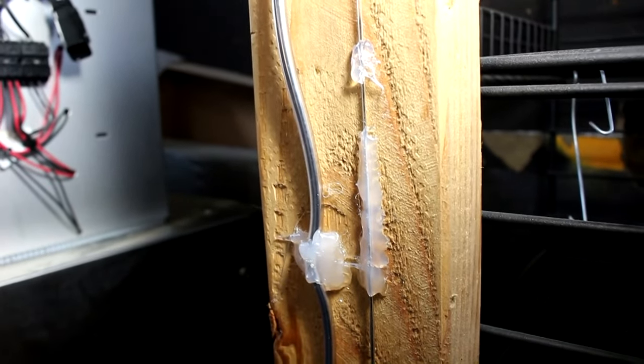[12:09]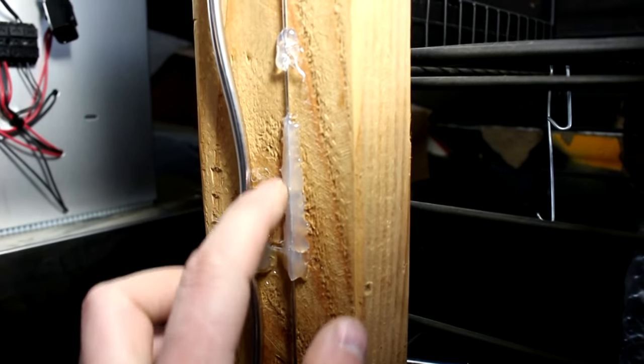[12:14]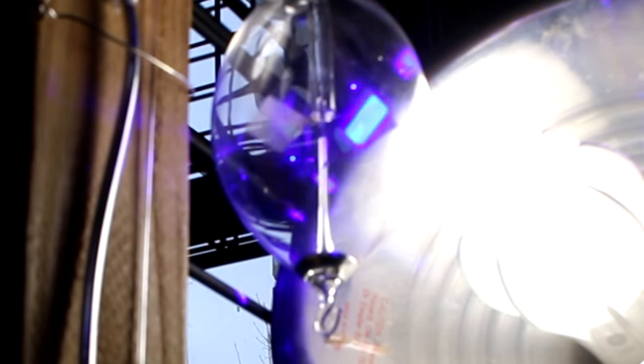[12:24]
One thing I think is pretty neat is those bubbles of air coming down and getting compressed to the point where they're almost not visible to the naked eye. And there's not a leak or anything, it's just that they're so close to a perfect vacuum that they're being compressed to a tiny, tiny droplet. You guys gotta see how fast this thing spins when I shine my laser on it. Look at that. I'm afraid it's gonna fly apart if I do it for too long.
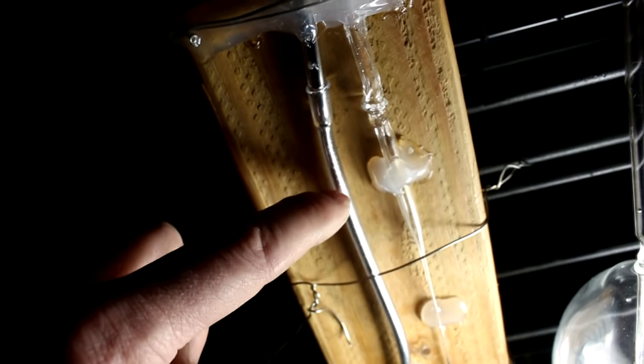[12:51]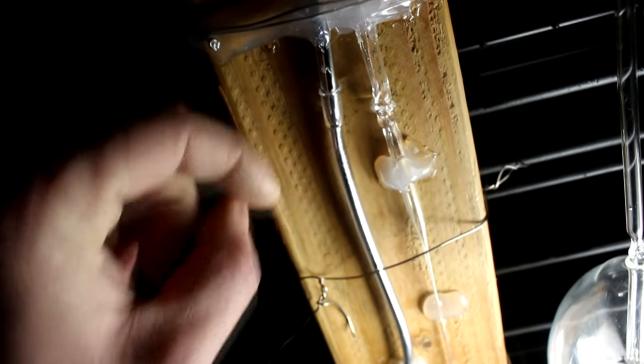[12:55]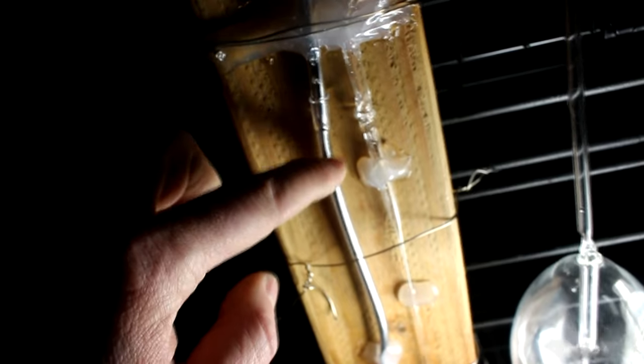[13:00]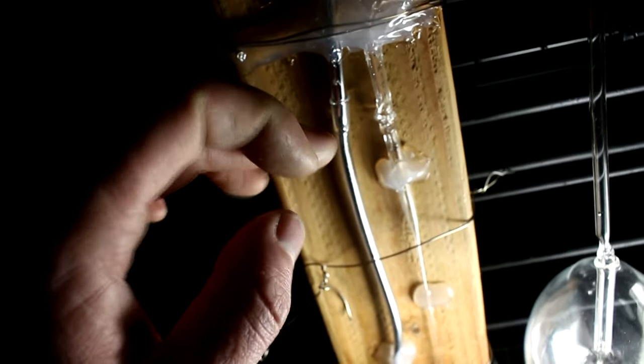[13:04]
If you take a look at this tubing, you can see that there's some little tiny air bubbles on the inside of the tube. See, I can't wipe them off. But there are not those little bubbles on the inside of the glass tube. Basically what this is, the gas, the air, is actually permeating the plastic and getting in. Although this, of course, is nearly 23 inches of mercury worth of vacuum here, so it's not very much, but it's certainly there. That's why I couldn't make the rest of this out of plastic.
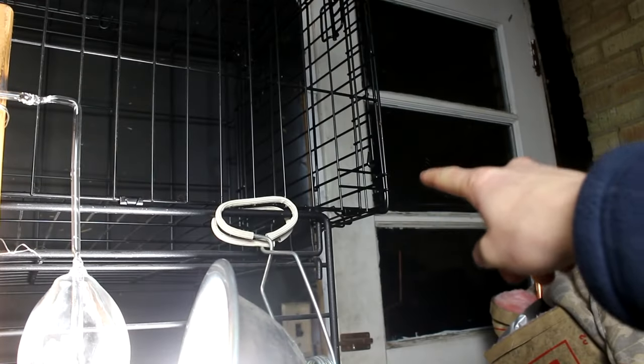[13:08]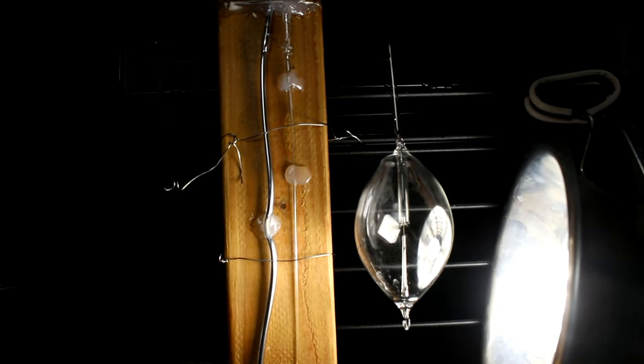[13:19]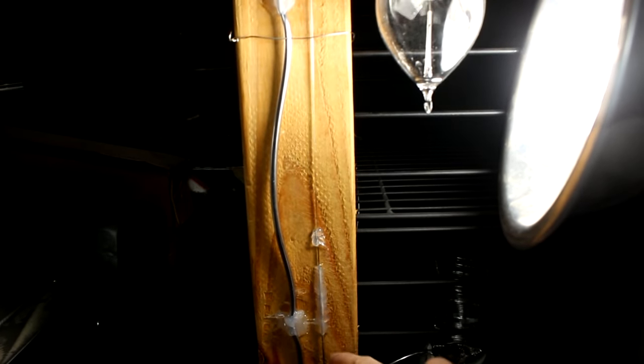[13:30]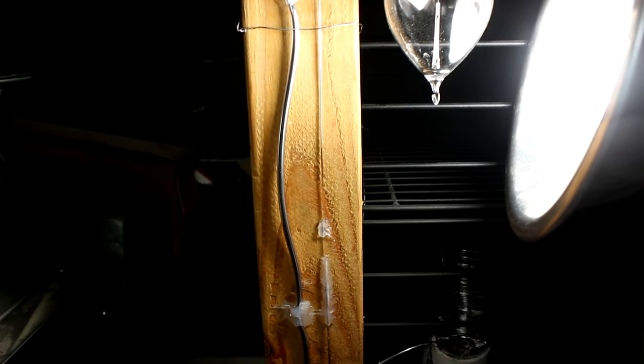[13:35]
So as you can tell from looking out the window, it is now 8 o'clock at night, and the little thing is still spinning. It's spinning a little bit slower, but that might just be because I've bumped the light. In fact, the last several times I've checked on it, which is several hours, I don't think it's had any noticeable change. Looking down here, I used to be able to see little bubbles of air that would sometimes form and then eventually work their way out. I haven't noticed any more bubbles of air, which means this thing's no longer pumping.
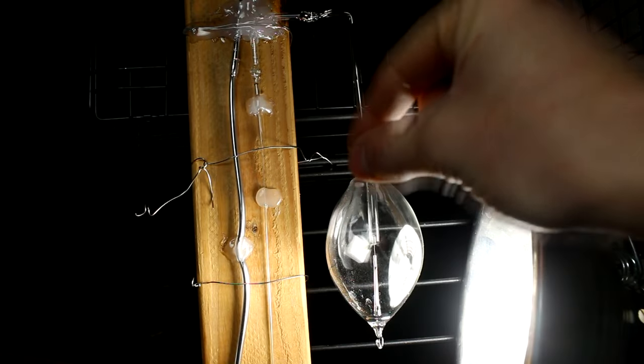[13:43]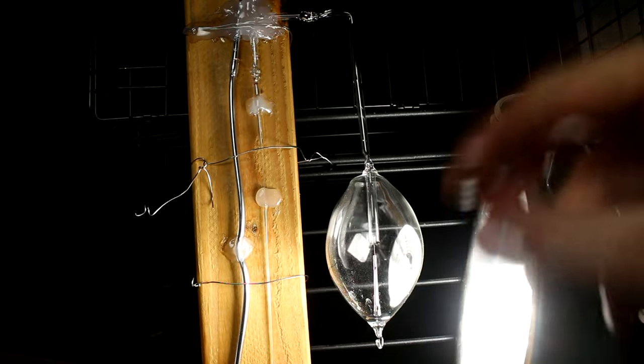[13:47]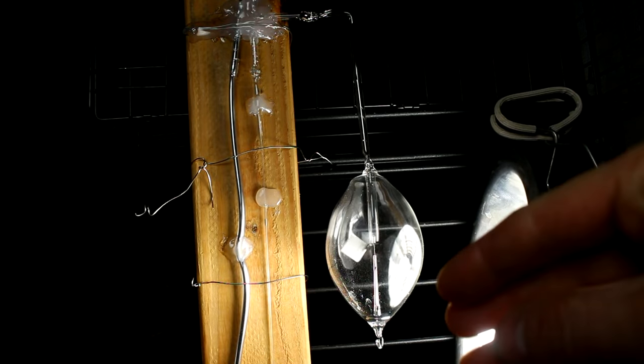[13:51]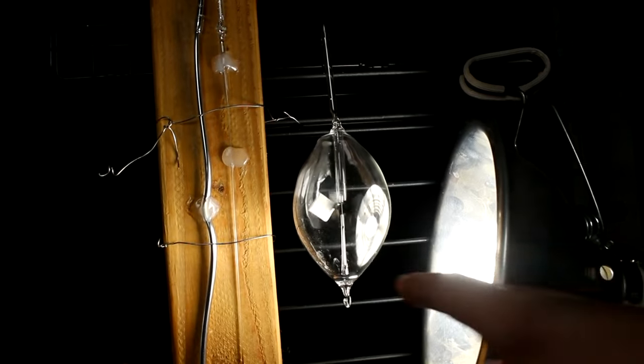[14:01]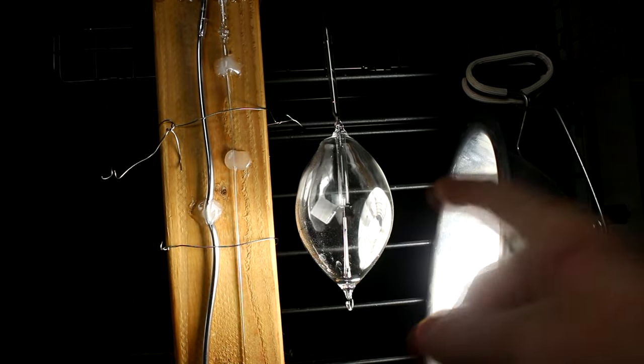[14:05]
It is producing some nice flashes of light, which are from the electrostatic discharge of the mercury rubbing against the glass. I wouldn't call them bright flashes. In fact, I have to let my eyes adjust to total darkness for several minutes before I can see them. And to show them on camera, I'll probably have to turn up the brightness of the video. But yeah, the radiometer still is spinning, which means the pressure is not low enough to stop it.
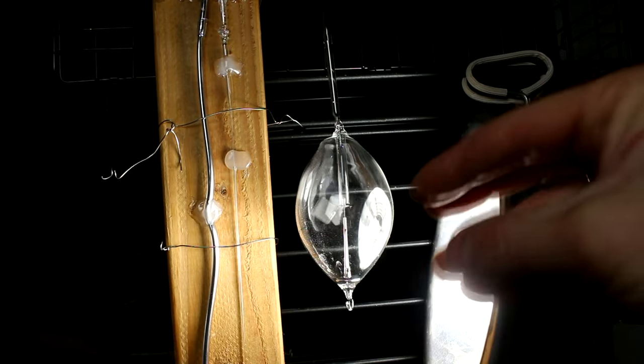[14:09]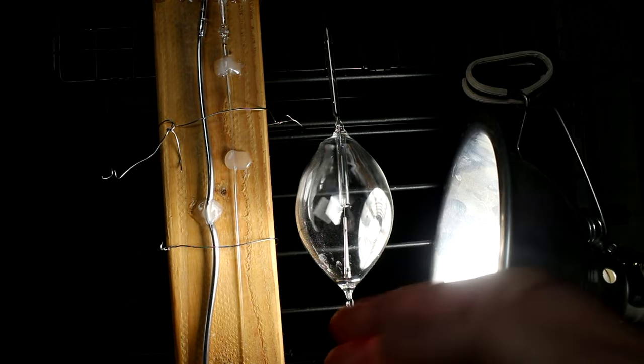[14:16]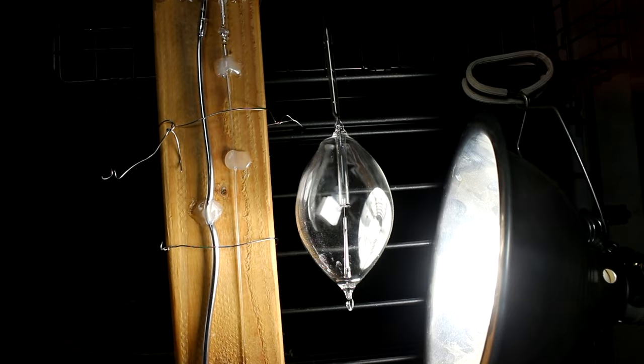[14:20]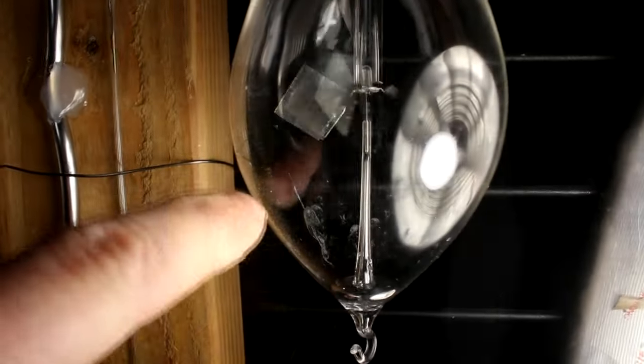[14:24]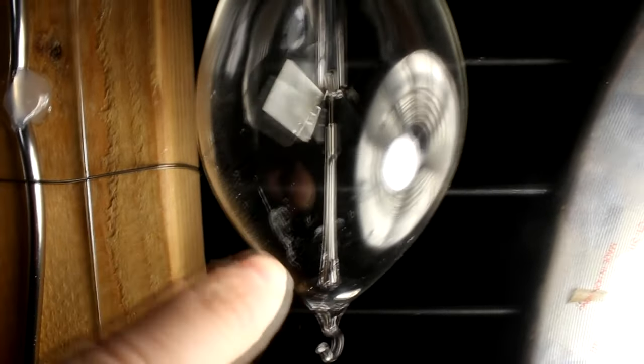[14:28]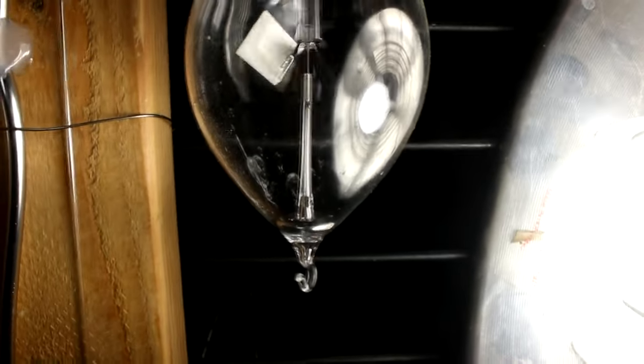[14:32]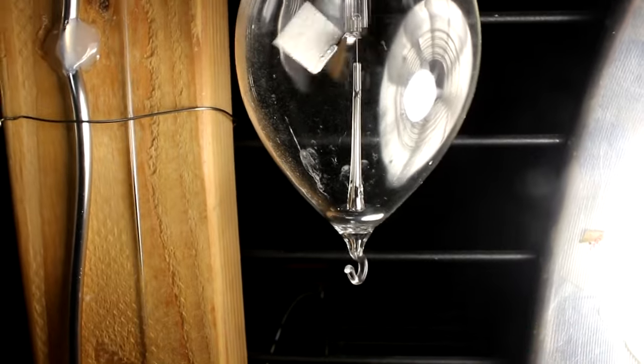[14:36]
Now, I was sort of puzzled about that because the temperature in here right now is about 32 degrees Fahrenheit, 0 degrees Celsius. At that temperature, the mercury's vapor pressure should be in the submicron level, which would at least have this thing going rather slowly. But if you look real close here, on the inside of this bulb, you can see little droplets of mercury condensing on it, but not on this side. That tells me that this light is heating up the glass and causing the mercury to vaporize.
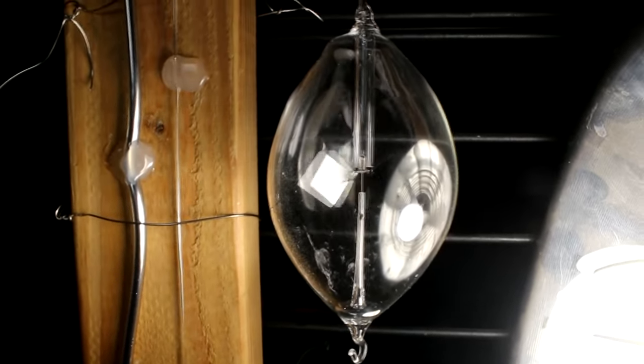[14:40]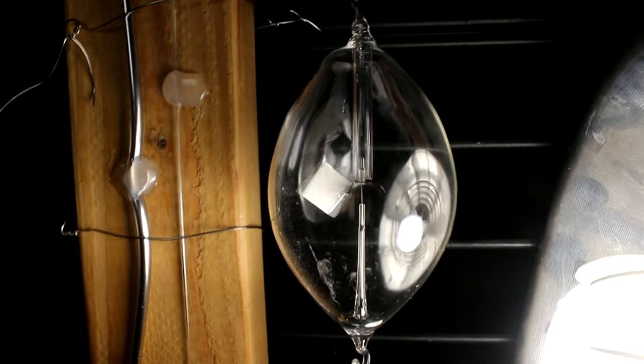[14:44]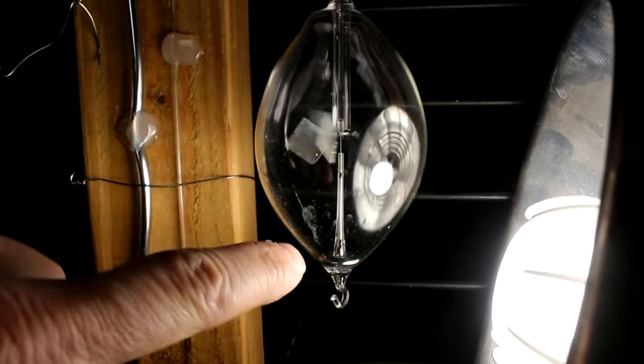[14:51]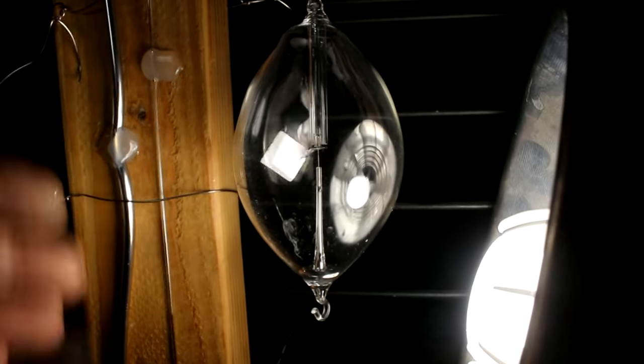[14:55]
The pressure is still obviously quite low. My guess is around 5 to 10 microns, which is still better than I've ever been able to do, but it's actually about the perfect pressure for this radiometer to work. In order to achieve a higher vacuum, what I need to do is actually cool this down. If it's hot like this, then the mercury is just going to keep replenishing the vapor.
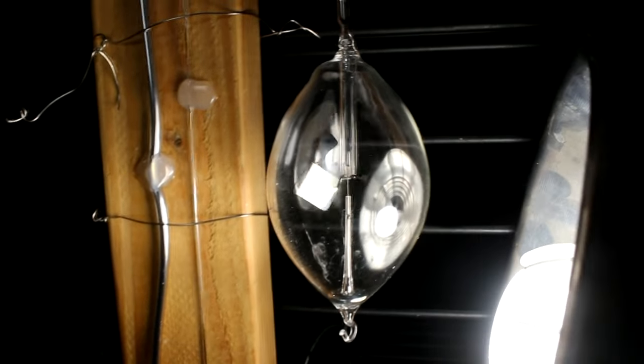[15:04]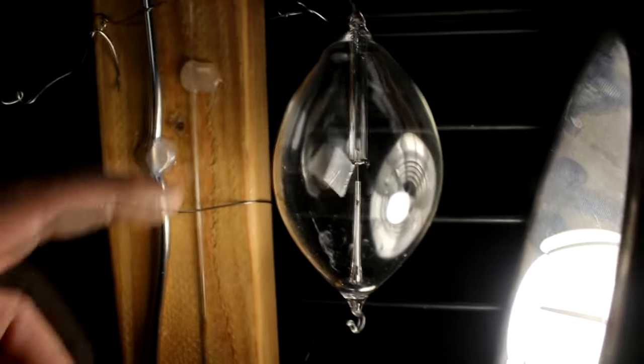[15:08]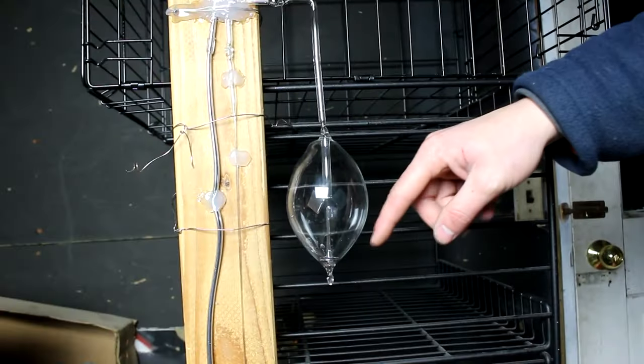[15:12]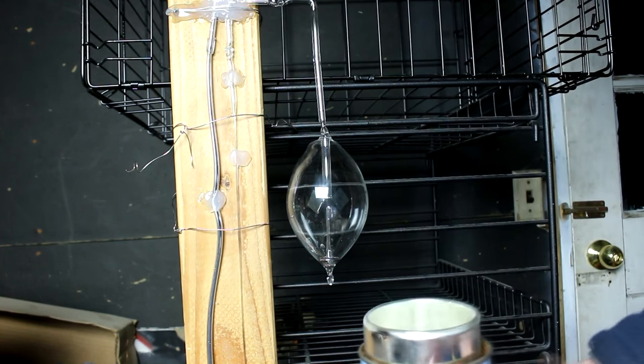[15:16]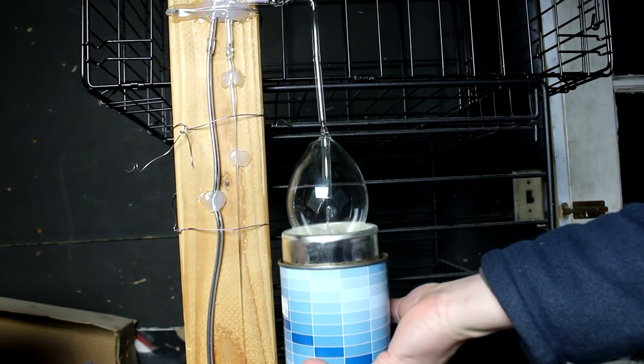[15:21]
Eventually this would take it out, but it could take forever. So let's say I take some liquid nitrogen and cool this off. I'm 80% sure this glass can handle it. For this, I've turned the light off and let the glass cool. That way the thermal shock won't be quite so bad. Here's a flask of liquid nitrogen. Let's see what happens if I cool it.
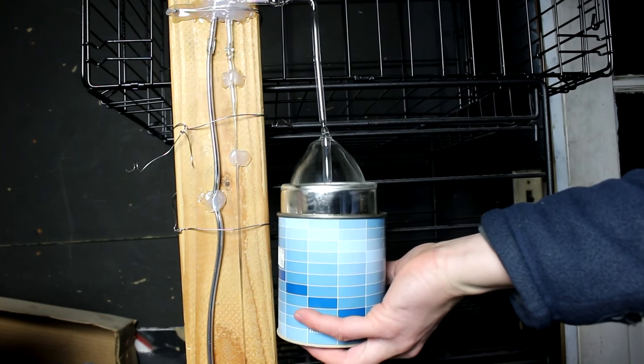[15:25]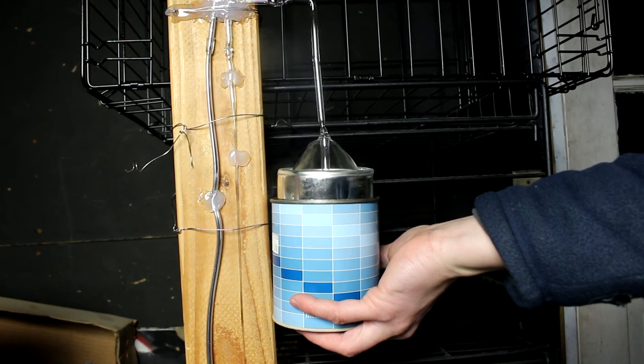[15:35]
Theoretically, at liquid nitrogen temperatures, the vapor pressure of mercury should be essentially zero. Let's see what happens. Hopefully it doesn't break. If it does break, it'll implode and probably throw glass everywhere. That's why I'm wearing some safety squints, to quote Abe. Okay.
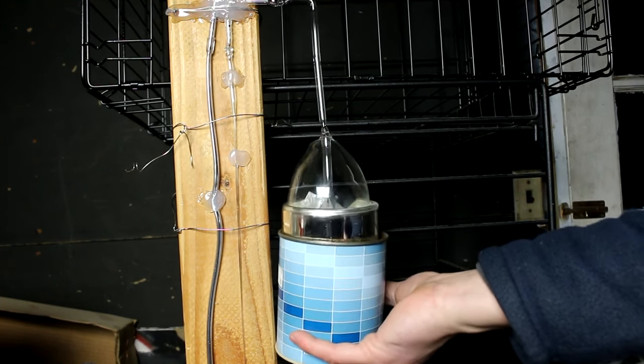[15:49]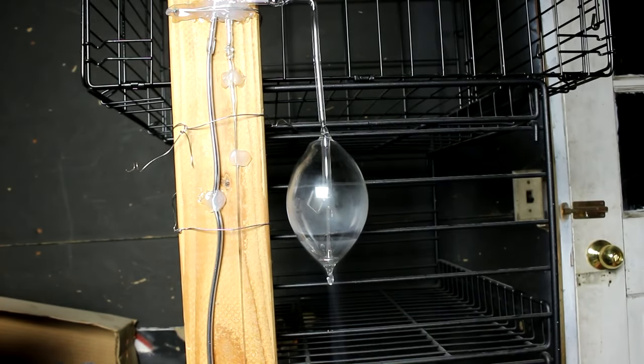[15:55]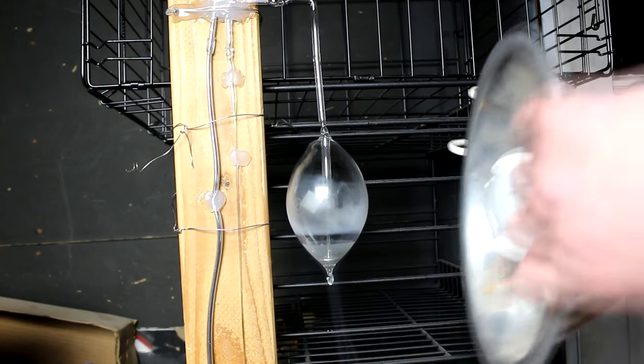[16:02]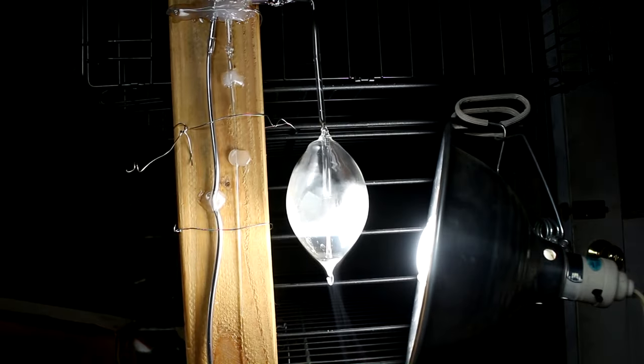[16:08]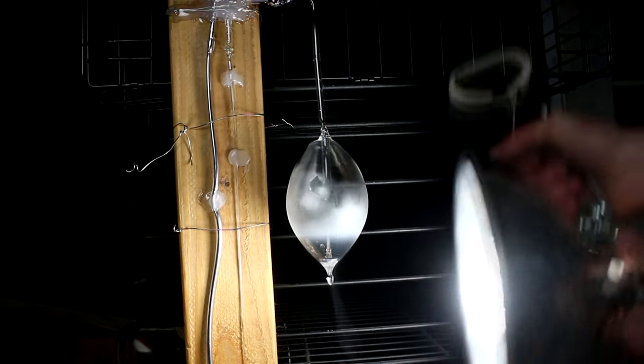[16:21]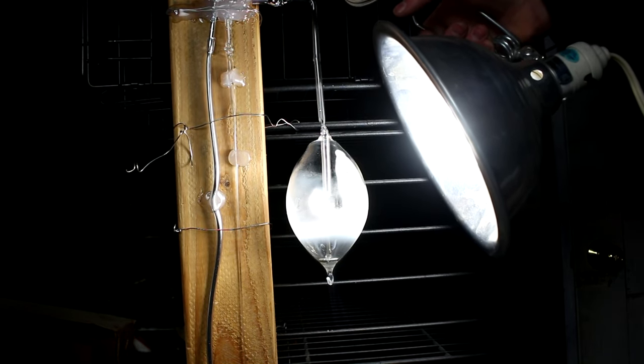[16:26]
So the mercury in there is now frozen, and the glass is cold. Let's turn this light back on it and see if it still spins as quickly as it did. Okay, it's definitely slower, but the question is, is that because the frost is blocking the light? Angle the light down like this to get it through a part that's not frosted. Yeah, it's definitely slower.
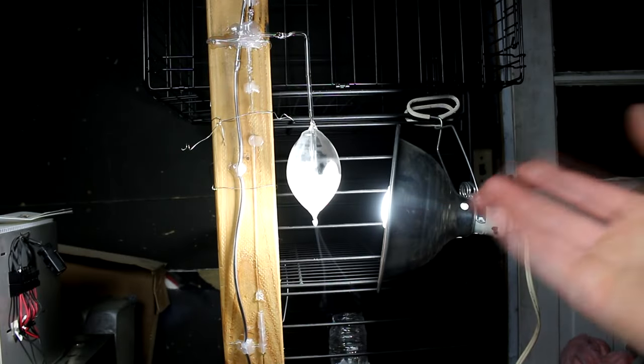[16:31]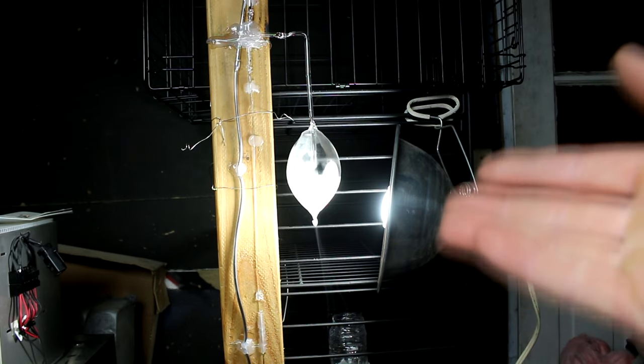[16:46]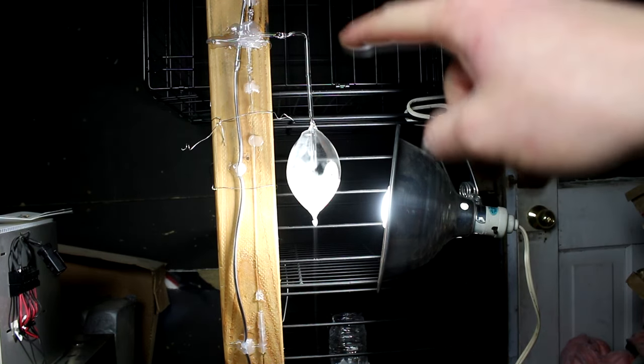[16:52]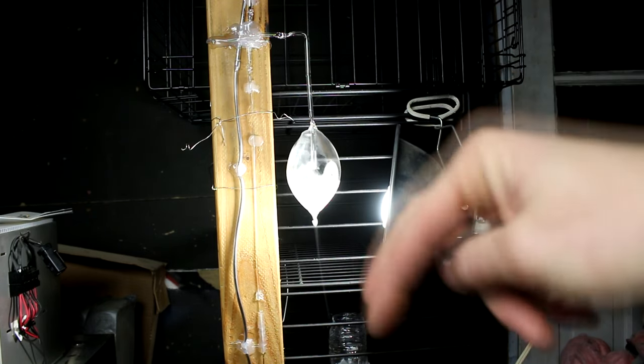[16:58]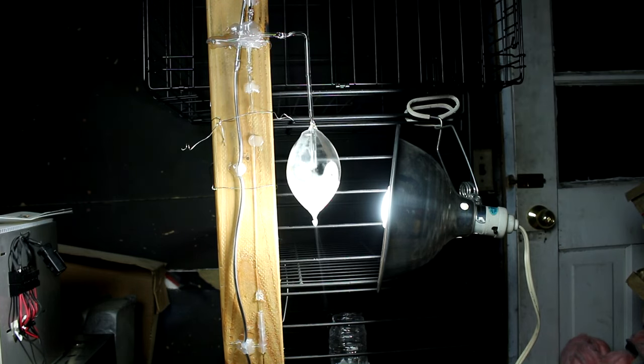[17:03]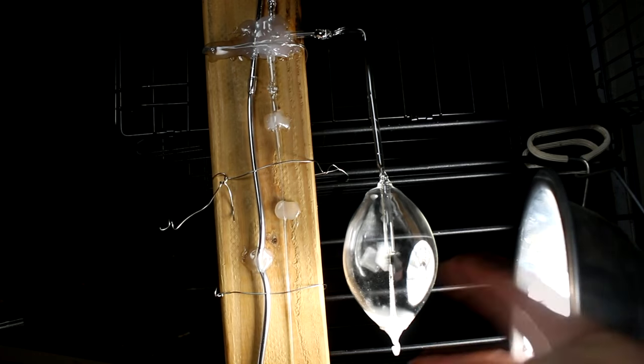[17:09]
So some of you may comment about the mercury vapor in the atmosphere that I'm breathing. Well, you might be able to hear that the window over there is actually open, and this garage doesn't seal very well anyway. So the vapor, as little as there would be, is not going to build up very much. Plus, I'm not in here continuously. Also, this is very similar to an aspirator pump, with the main difference being that instead of the flow of liquid pulling the gas out, it's actually the weight of the liquid forcing the gas out of the chamber. You can see as the glass warms up, the vapor pressure of the mercury increases and the radiometer spins faster.
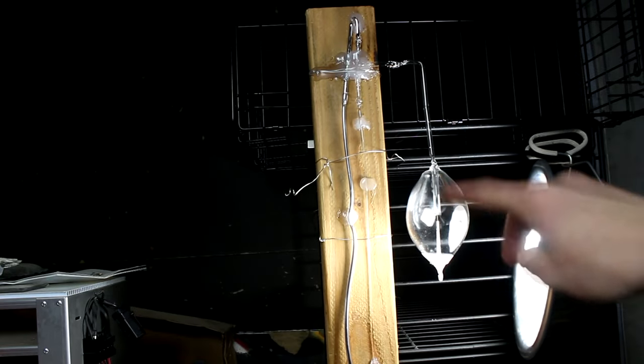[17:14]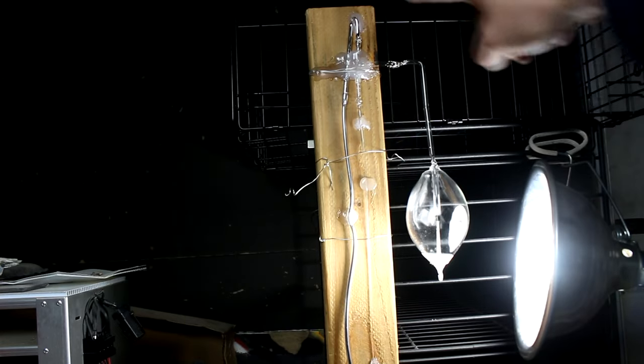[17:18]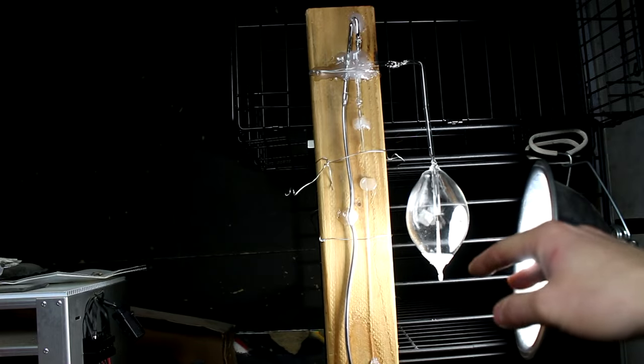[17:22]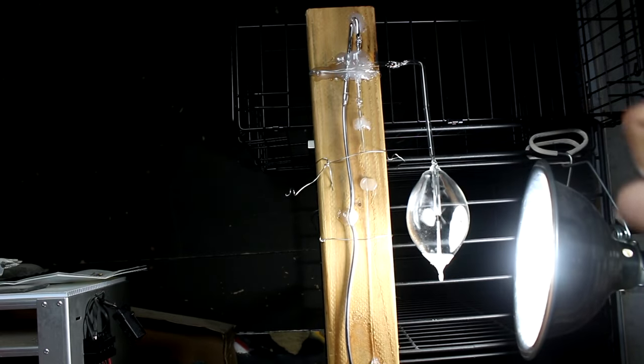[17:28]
To put pressure back into this chamber, what I'll probably have to do is let it run completely out of mercury and then lift this hose up and let all the mercury run through, and then it'll suck air into the chamber. Fairly simple, and I think that's the best way to do it without causing a conductive shock to whatever I've got in the chamber.
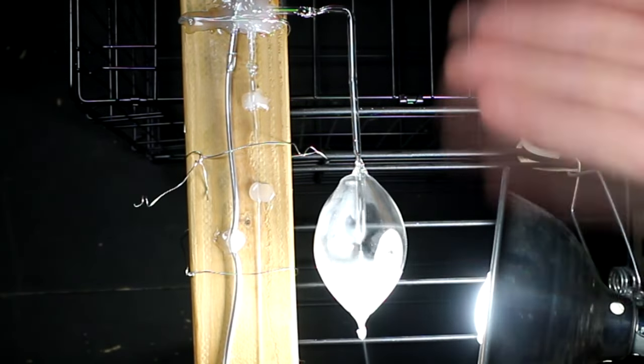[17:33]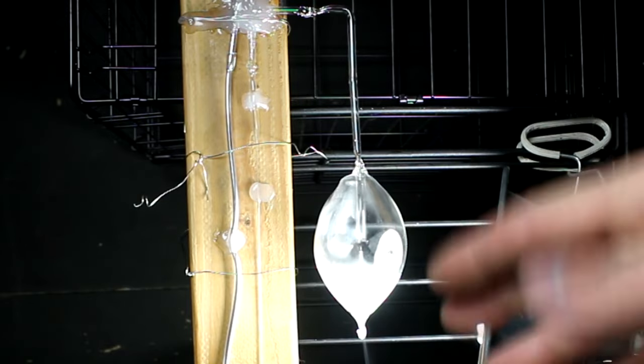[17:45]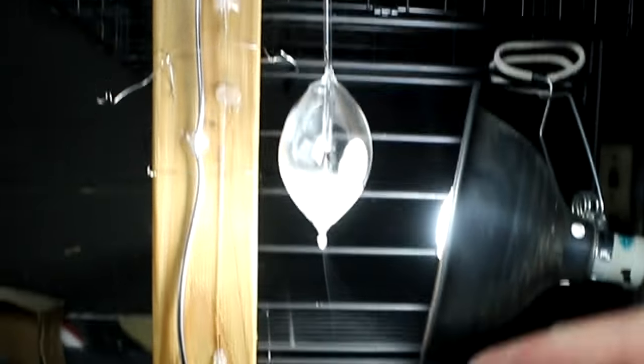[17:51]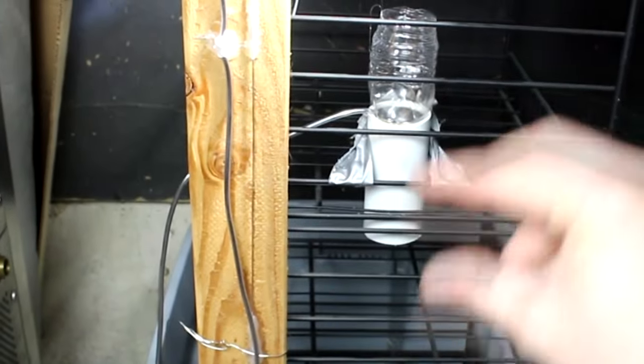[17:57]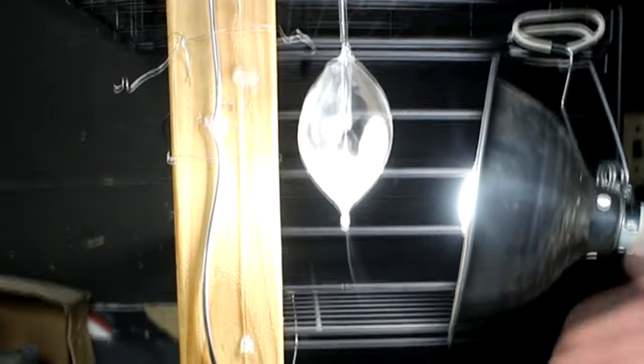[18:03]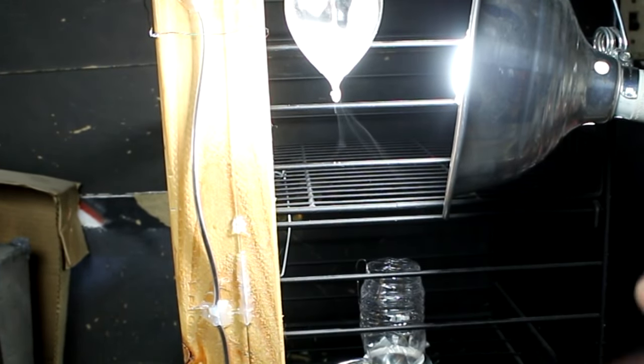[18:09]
And the final thing I'd like to mention is the efficiency of this device that I've created here. Obviously, I could probably do a lot better if I didn't have that little kink in the tubing right there stopping the mercury. You know, make it more efficient in the beginning. But even still, at, what is this, 34 hours of runtime, the amount of energy that I've actually put into this is very low. I've got 2 kilograms of mercury, which I have lifted the half meter here probably around 50, 60 times, which sounds like a lot, but that still equates to only around 700 joules of energy, which is the equivalent of running a 1 horsepower motor for 1 second.
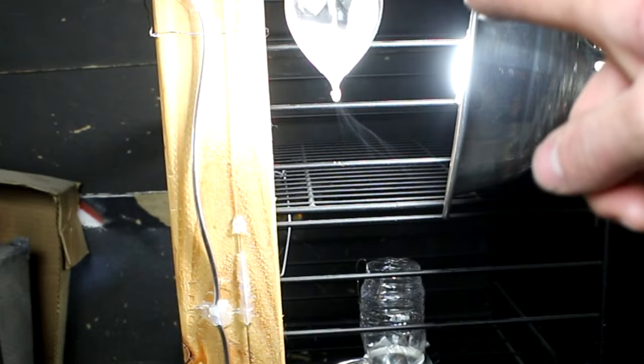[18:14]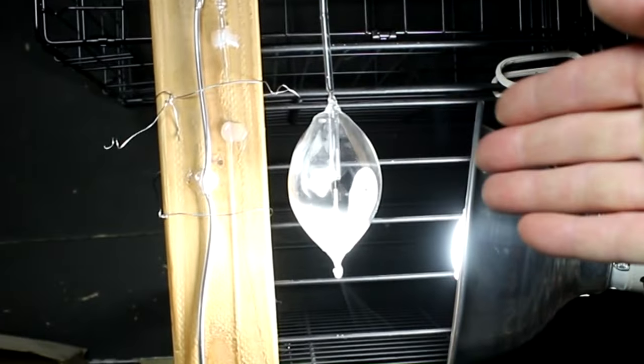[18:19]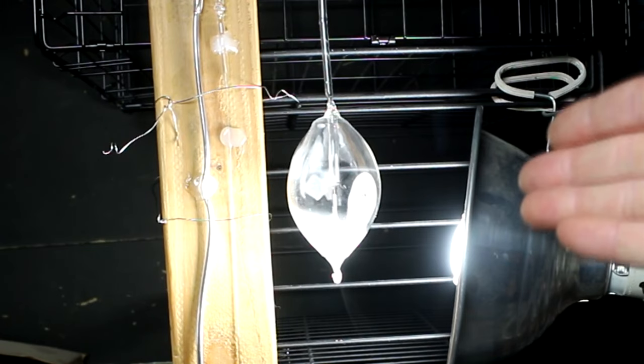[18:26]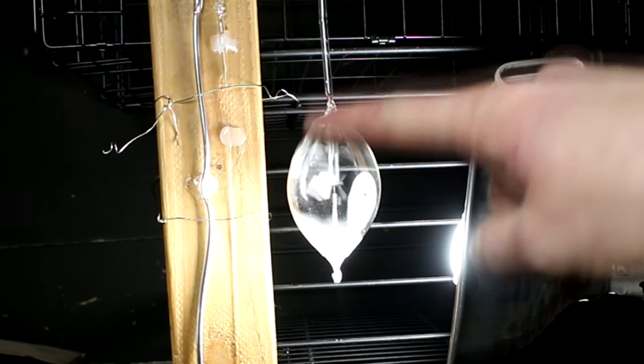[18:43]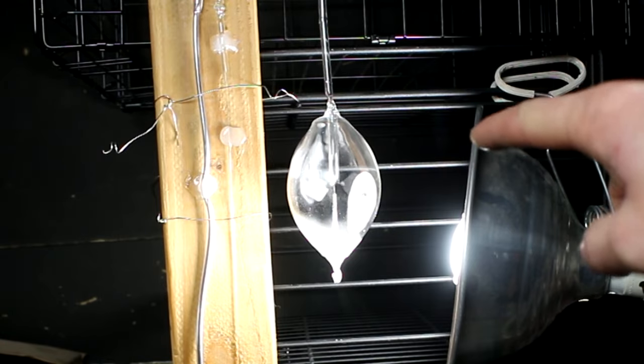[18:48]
And that's to evacuate this chamber here. My vacuum pump, which can't evacuate to this pressure anyway, but to get to its maximum vacuum, even on a chamber this size, I'd probably have to run it for several minutes. And it's 1/3 horsepower, which means this pump here is roughly 2 orders of magnitude more efficient energy-wise than that electric rotary vane pump. I think that's pretty neat. And this is 18th century technology here. You know, a pump like this was probably the one that was first used to produce a radiometer.
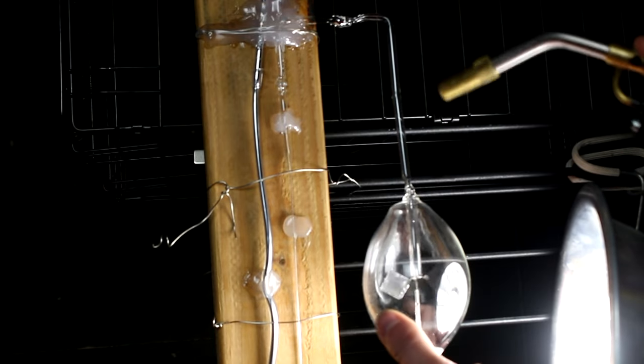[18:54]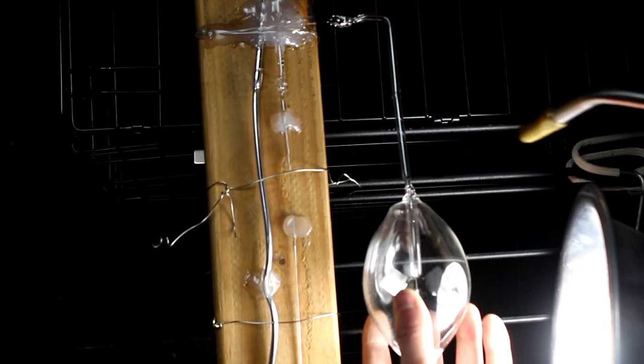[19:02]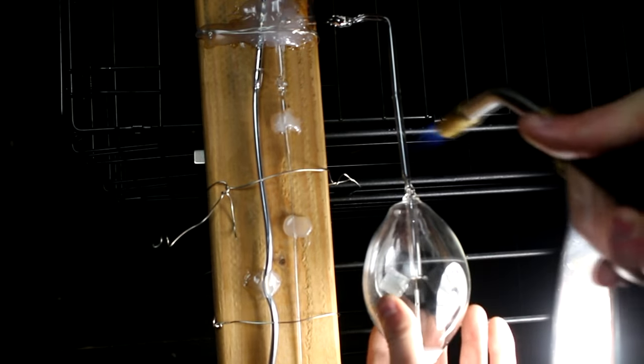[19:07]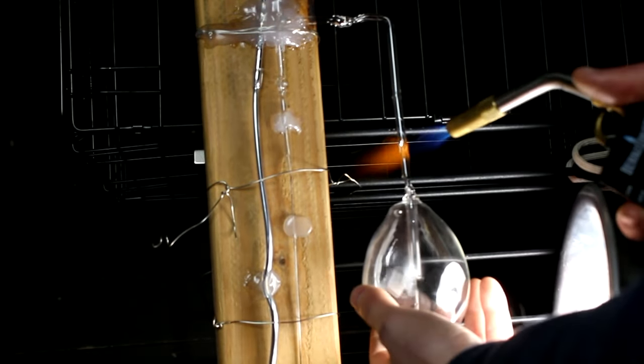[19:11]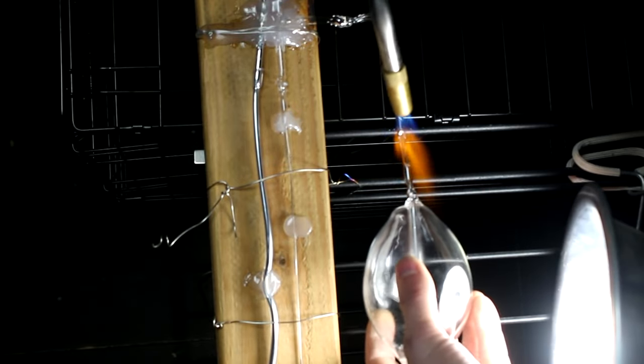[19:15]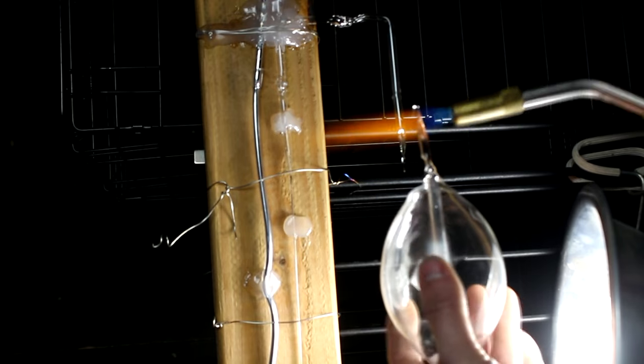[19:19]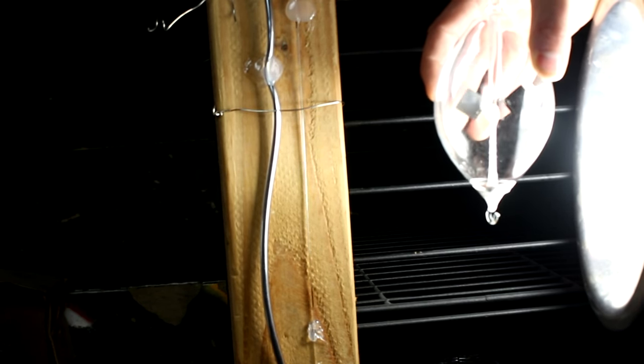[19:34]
So I've actually decided I'm going to take this radiometer off of here. So I'm actually going to heat the glass so that it seals. I'm going to pull it off, and I'll keep it forever in this vacuumed state. I think that'll be appropriate, don't you? Hopefully I can do this without shattering something. There it is. Hopefully it still works. And it does. It does still work. Excellent. I mean, I didn't make this radiometer, but I did make the vacuum that it's running in.
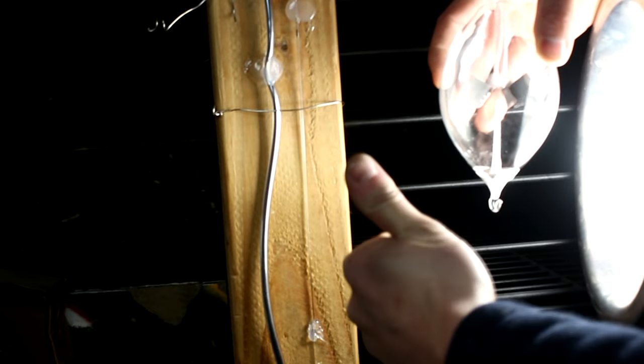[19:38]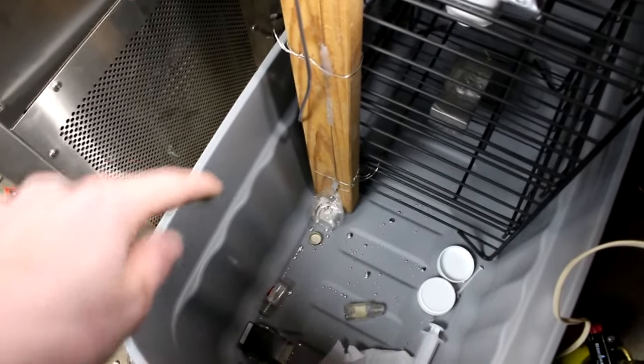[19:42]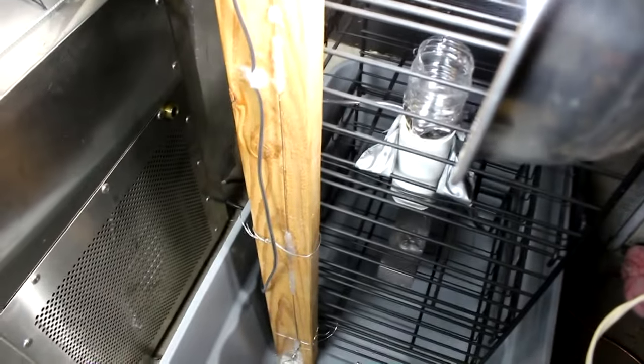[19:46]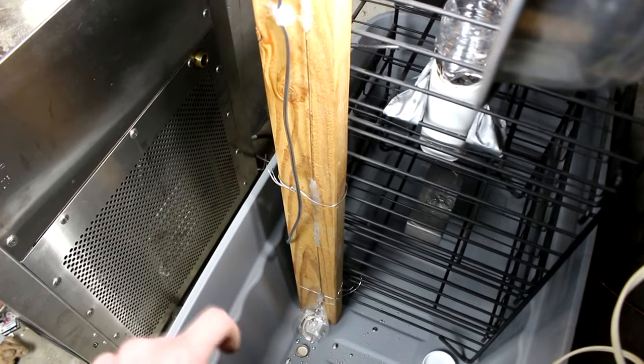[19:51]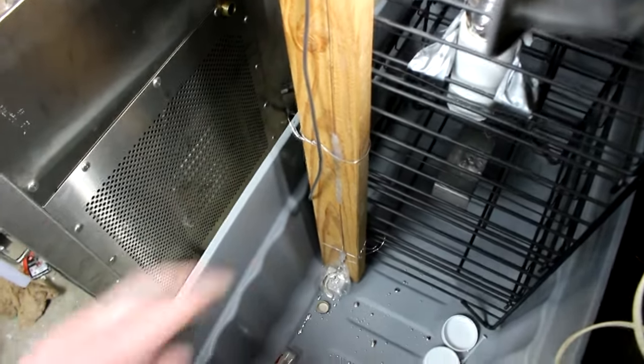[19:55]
Quick note for anyone that wants to try to build one of these. Never stick one finger in this pool of mercury and the other finger in that one. I did that and got the shock of my life. There's quite an electrical potential buildup between those two. So, just so you know.